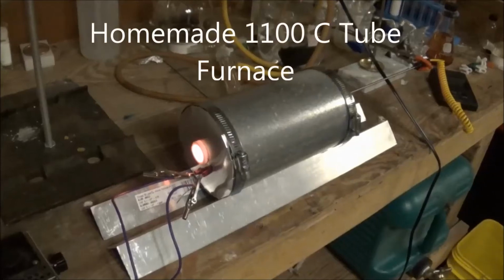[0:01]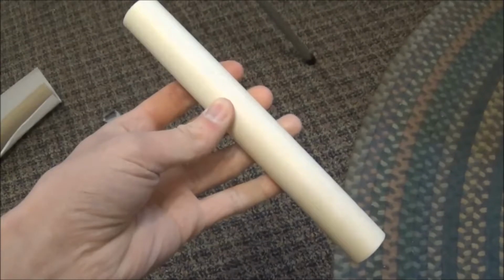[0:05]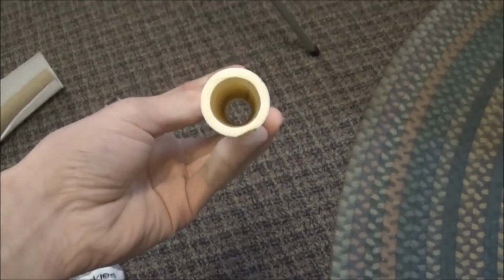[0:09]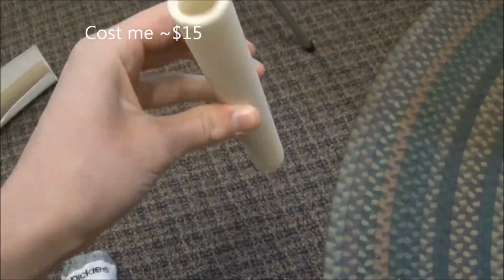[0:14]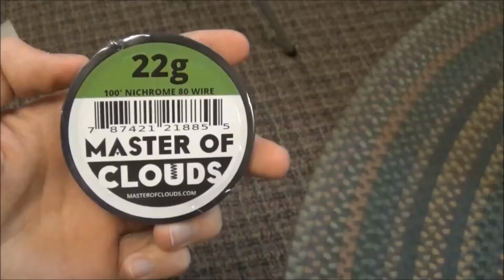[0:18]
Welcome back, everyone. Today, I will be building a tube furnace. The heart of the furnace is this ceramic tube. It's rated up to 1500 Celsius and measures 25 millimeters on the outside, 20 millimeters on the inside, and 200 millimeters long. I also got some 22 gauge nichrome wire.
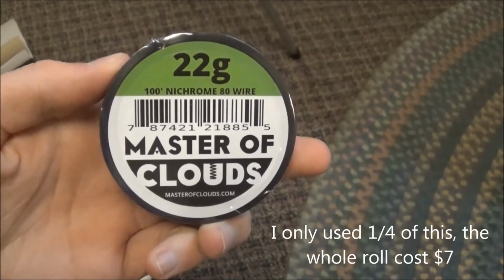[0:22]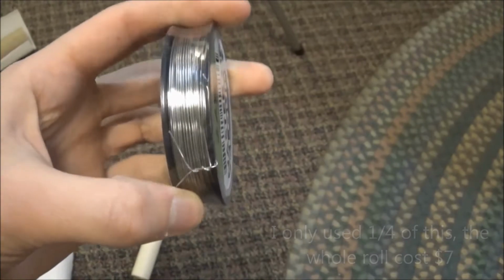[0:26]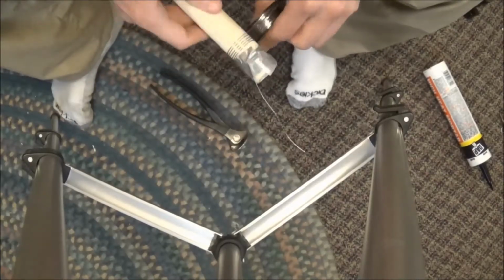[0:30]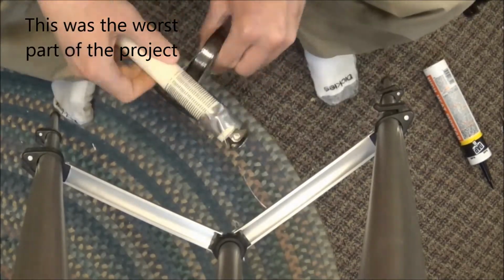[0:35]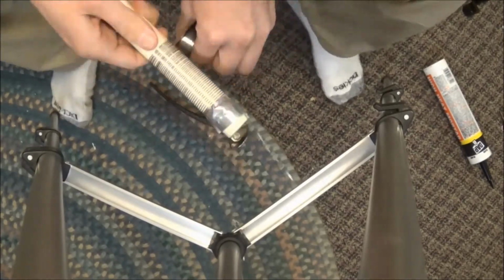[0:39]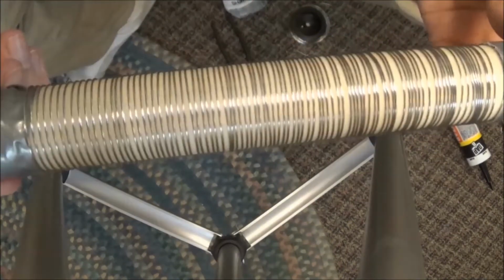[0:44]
The first step was wrapping the wire around the tube. I tried to keep the spacing as close together as possible, but I was rather uneven, and as you can see near the end, the spacing was very bad. This is okay though, because I will fix it as I put on the mortar.
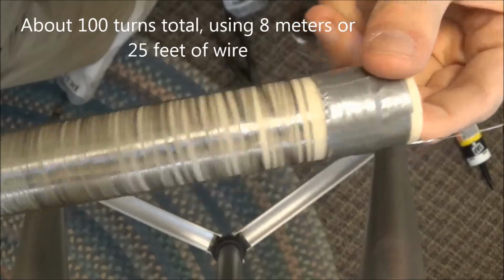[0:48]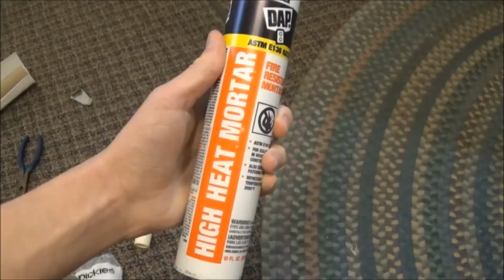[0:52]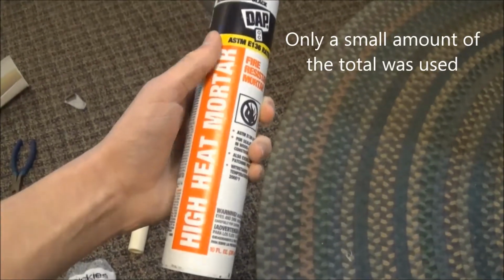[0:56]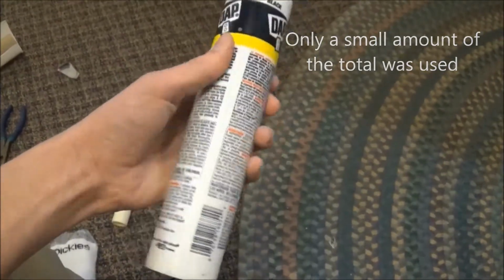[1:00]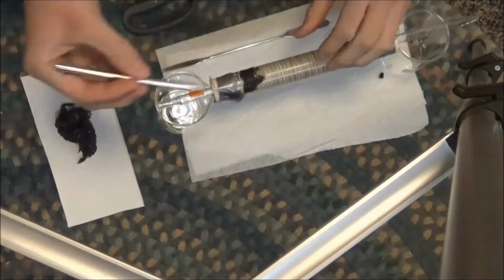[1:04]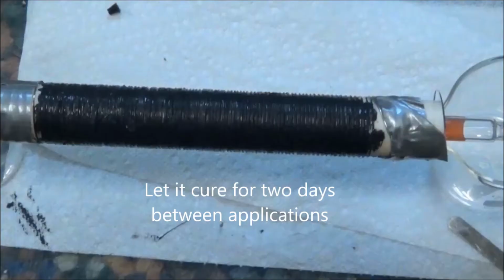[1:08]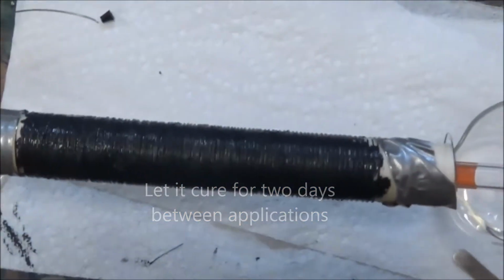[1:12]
The mortar is this high heat mortar. It costs about $5 for a large tube, and it's rated up to 2,000 degrees Fahrenheit, or 1,100 Celsius. I painted it on with a brush. The first coat is a thin one to keep all the wire in place, and after that, I added a second, thicker coat to completely cover everything.
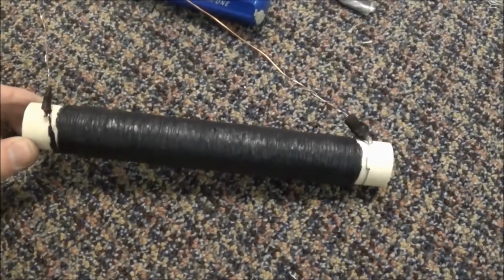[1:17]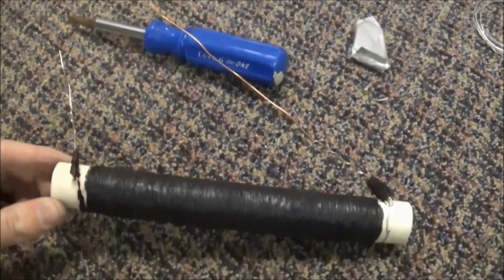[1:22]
Here you can see it after everything is cured. I also added on these two solid copper wires to serve as connections.
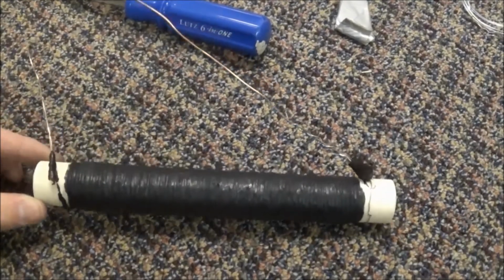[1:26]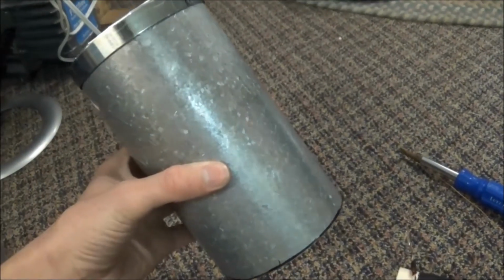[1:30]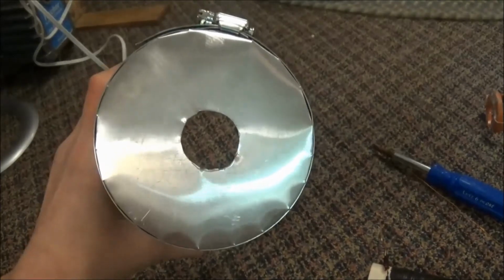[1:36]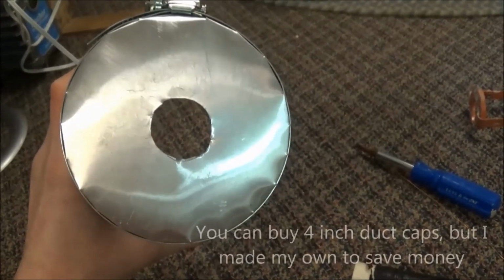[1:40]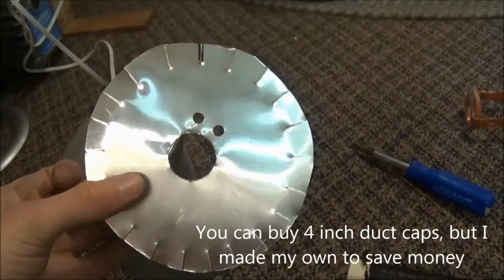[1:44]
As the mortar was curing, I made the body of the furnace. 4-inch metal duct was cut, a little bit less than 200 millimeters long, and I cut out aluminum flashing to make the ends like this one you see here. I cut out the center and slits in the edge so I could fold it over and then clamp it
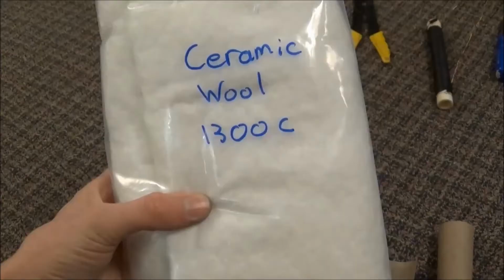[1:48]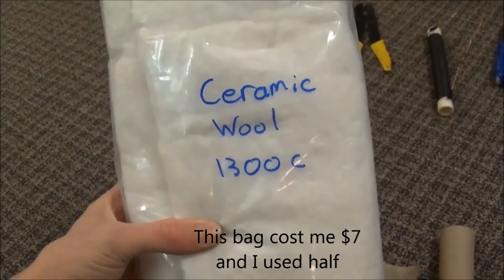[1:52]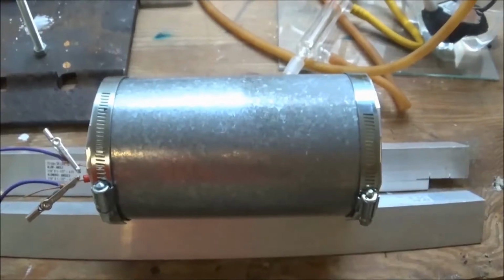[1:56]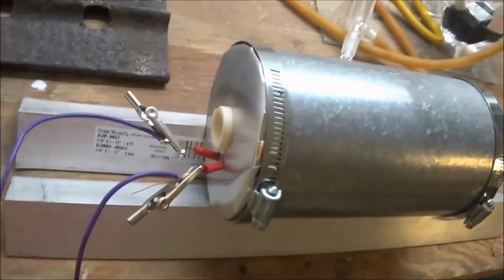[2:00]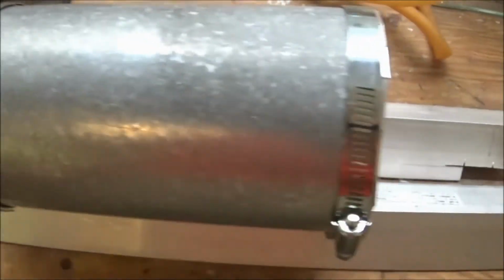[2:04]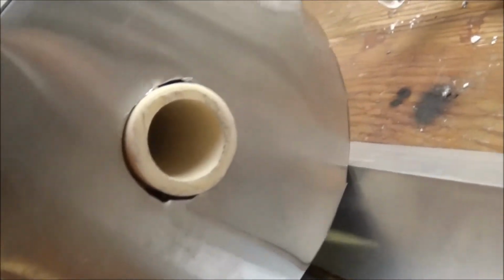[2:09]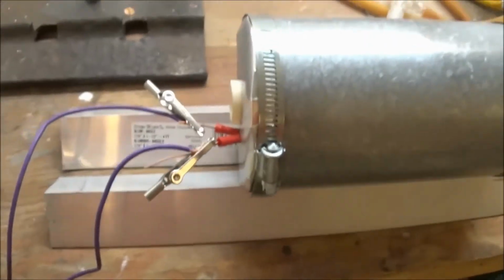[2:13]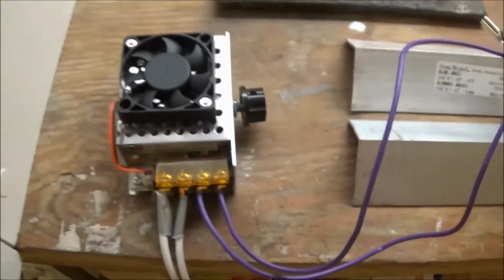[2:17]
with a hose clamp. For insulation, I got this ceramic fiber, or ceramic wool, which is rated up to 1300 Celsius. After wrapping insulation around the tube, I put everything inside of the housing and clamped on the other end. It took about 1 square foot of half-inch ceramic fiber in order to insulate everything well. The electrical connections come out through the end, and I might fix this later, but for now it works.
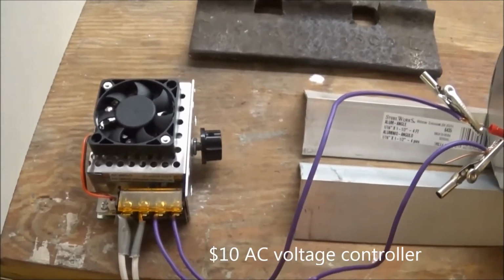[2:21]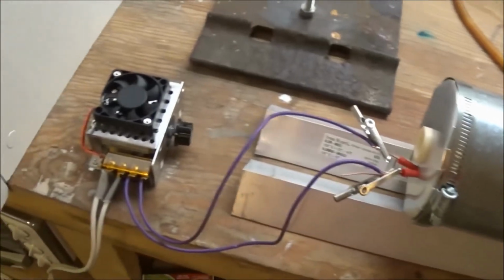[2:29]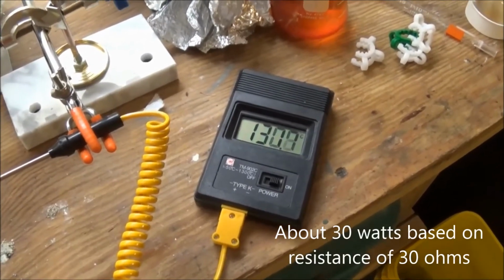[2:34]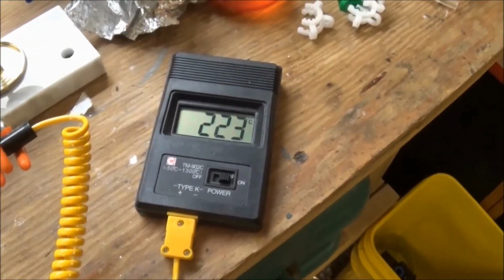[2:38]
I hooked it up to a power controller. With a thermocouple inserted to the center, I started my testing. For the initial run, I kept the voltage low at around 30 volts. This is so I don't stress anything and allow any water that's still in the mortar to be driven off.
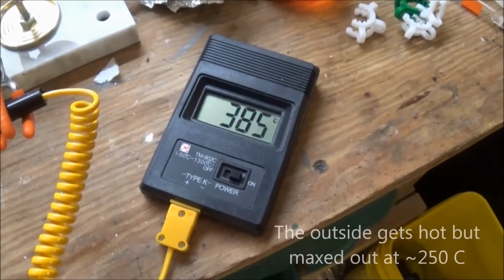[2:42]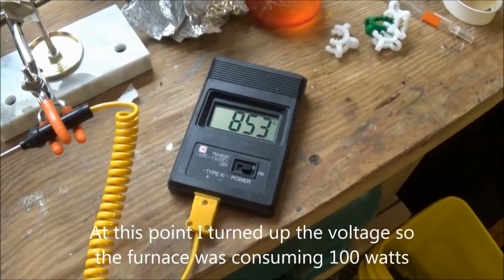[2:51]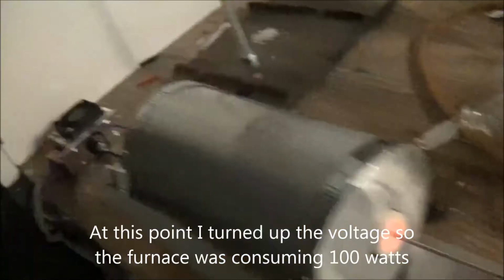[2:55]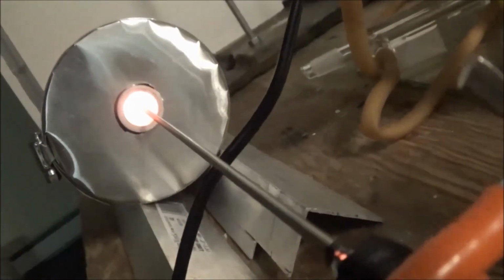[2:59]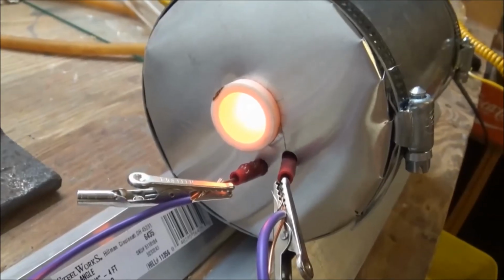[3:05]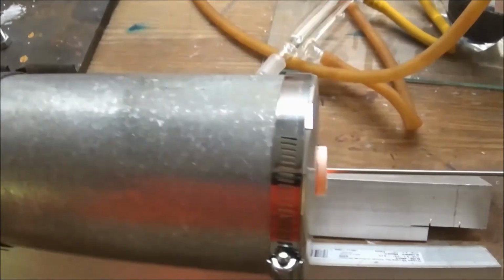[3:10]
At around 650 degrees, I could see a glow starting in the inside. By 900 degrees, the glow was very bright from inside. It took an hour of heating, but I finally reached 1100 Celsius.